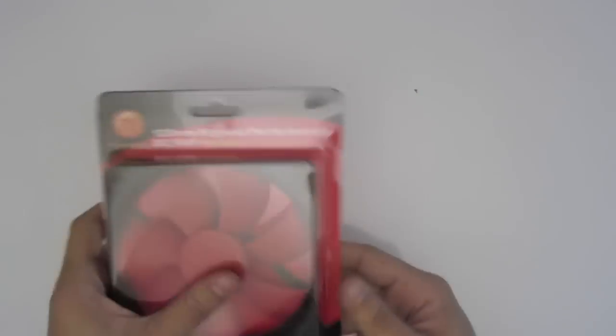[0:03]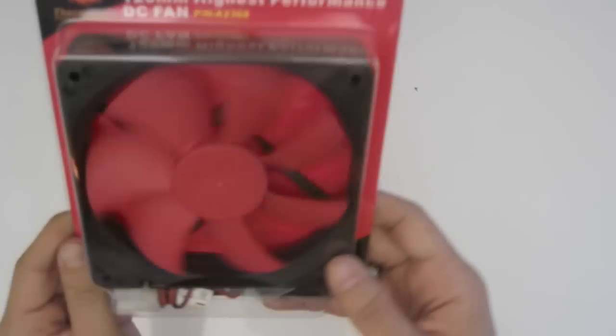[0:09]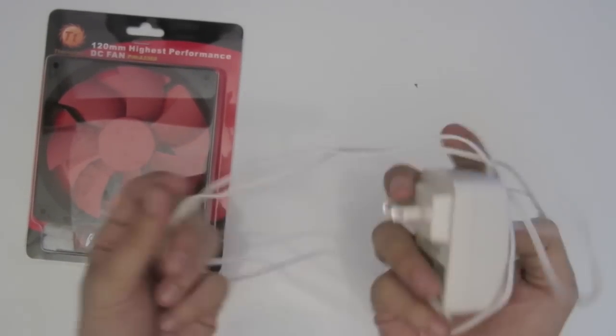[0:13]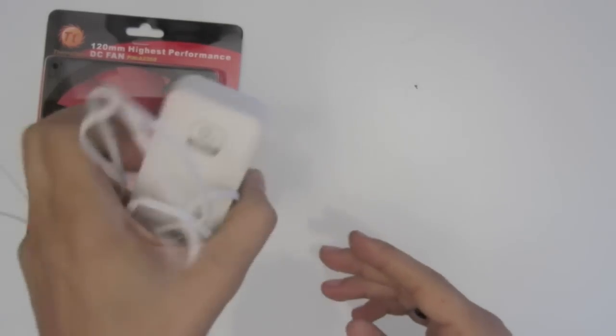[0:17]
So I'm going to make a really quick magnetic stir. First thing you're going to need is a PC fan. This is a really easy $10, $15 PC fan. Going to need a standard AC adapter that just goes like a wall wart, 12 volt.
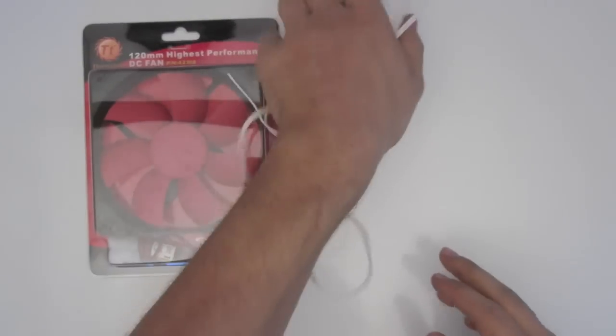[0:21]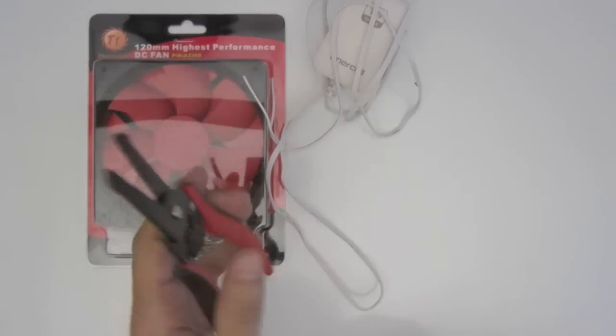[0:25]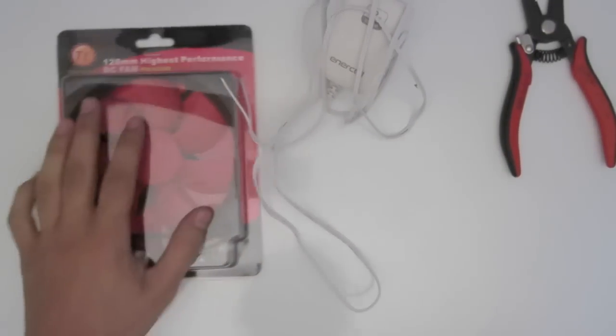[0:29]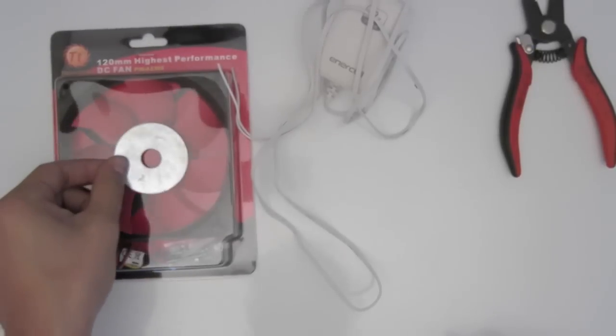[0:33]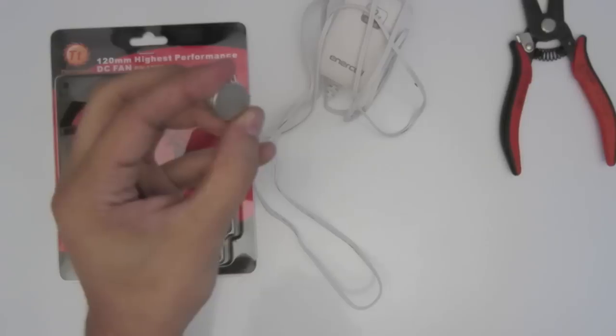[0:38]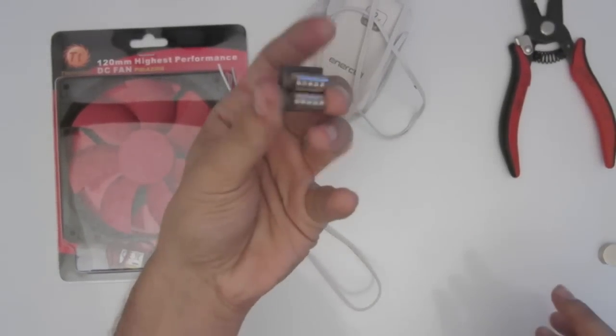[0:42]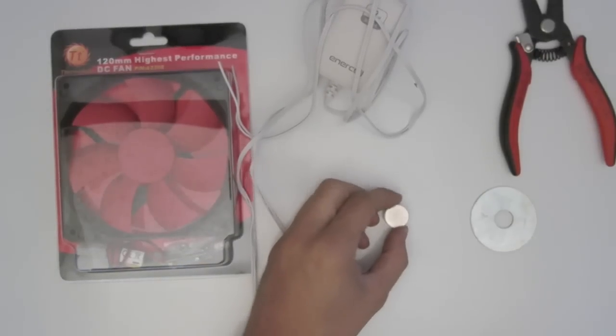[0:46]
Going to need some wire cutters, wire strippers. Let's see. You're going to need a pretty big washer that'll fit over the center there. Some rare earth magnets. So we got 3 here, and then I got a couple of other smaller ones here. And that's all you need. Alright, so the first step is to
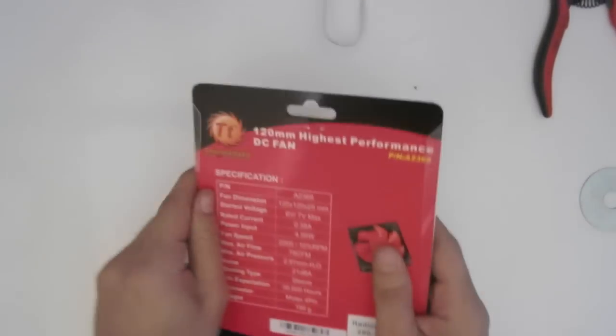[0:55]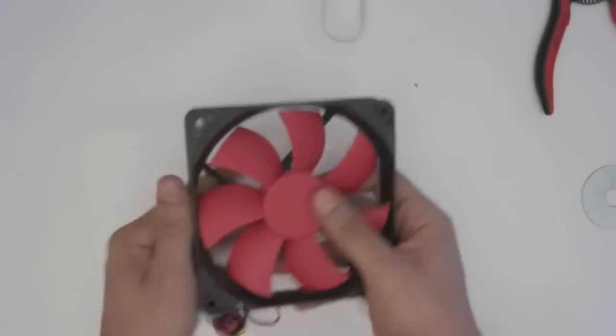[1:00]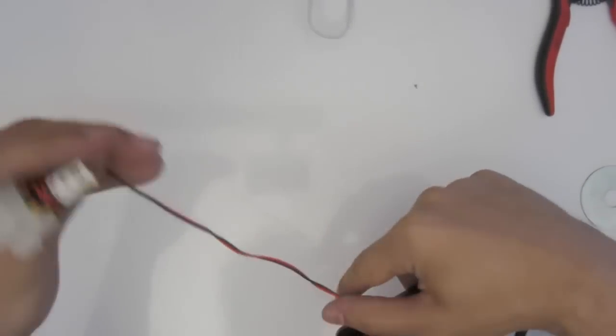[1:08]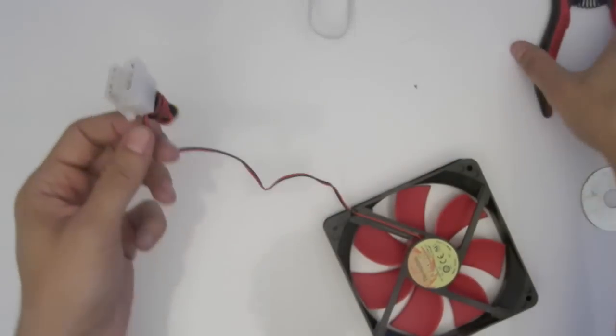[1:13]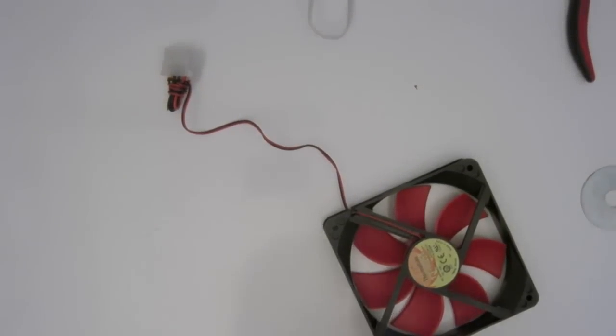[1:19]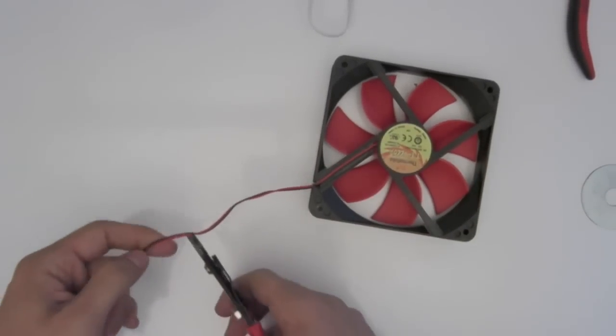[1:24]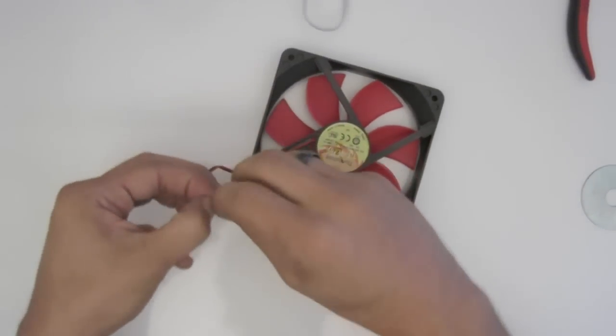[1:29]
make sure your magnets are away from everything else. Open this up. So we don't need that. Basically, just need the black and red wire. So there's a yellow wire in here, but we're just going to snip that off. So we can go ahead, grab the cutters, snip that, split them apart.
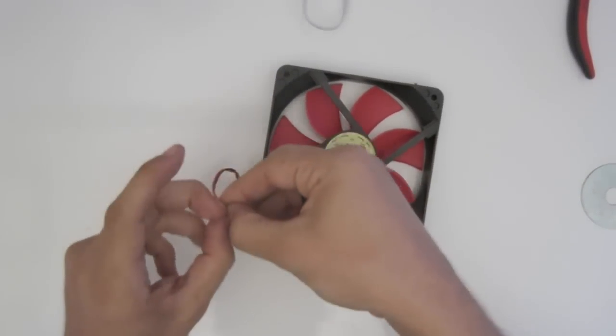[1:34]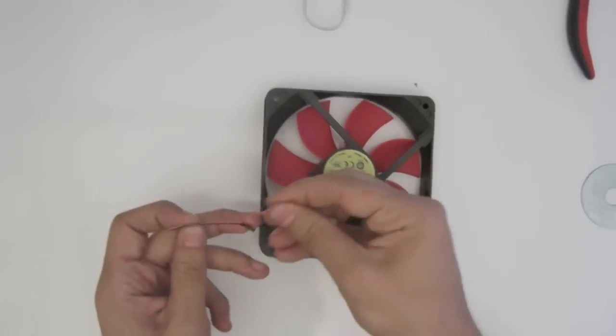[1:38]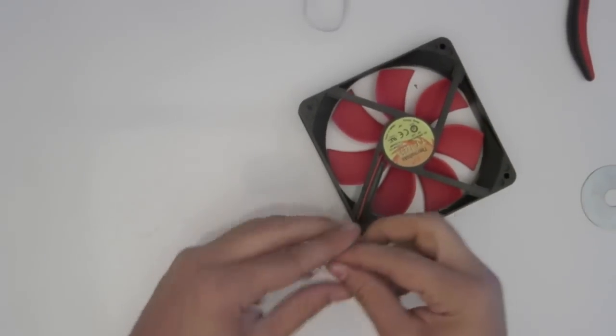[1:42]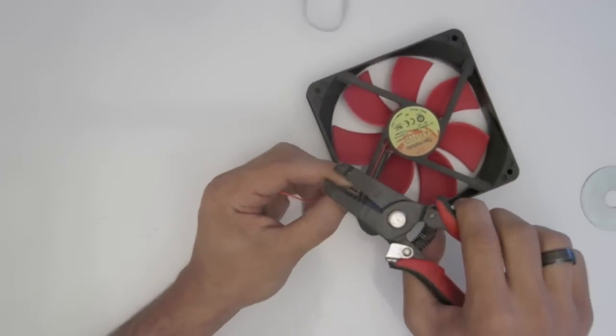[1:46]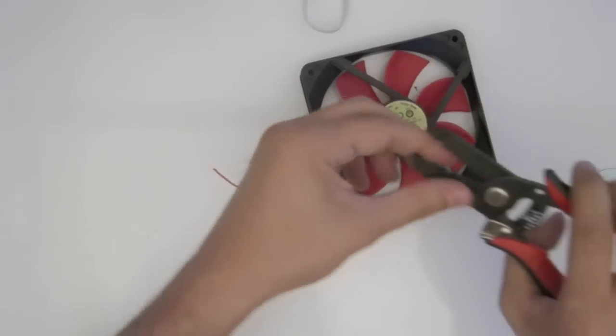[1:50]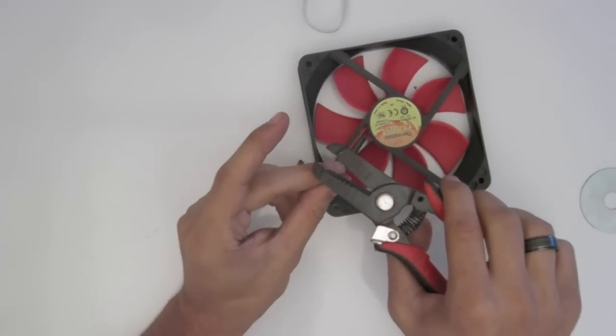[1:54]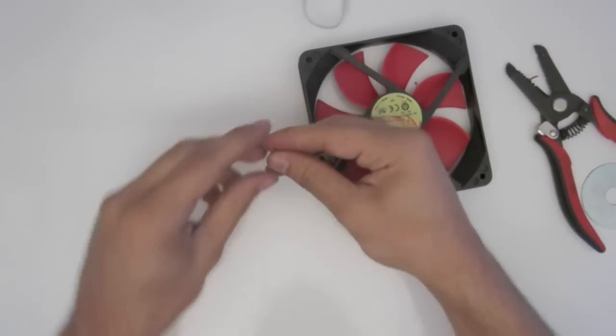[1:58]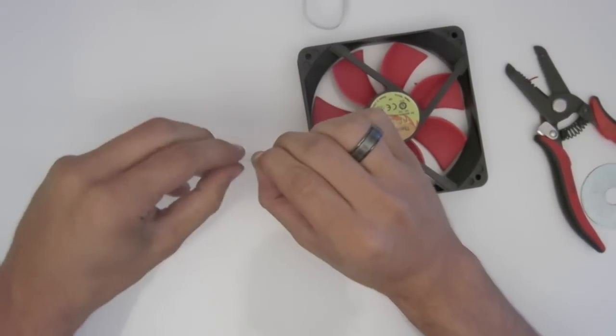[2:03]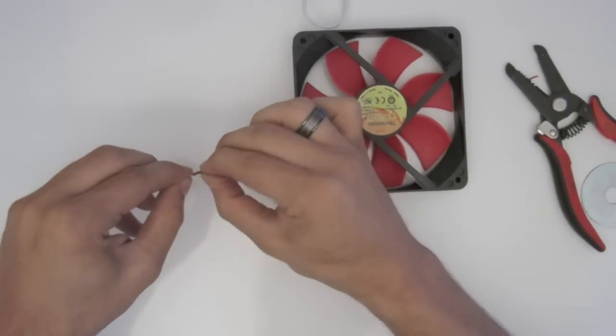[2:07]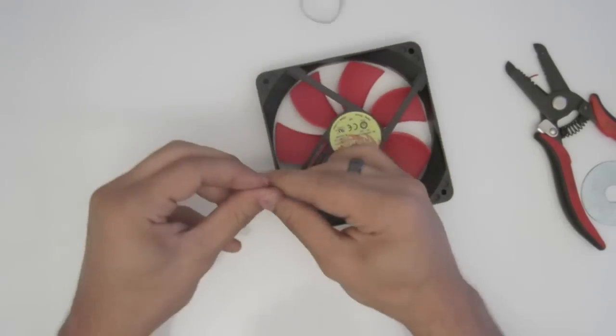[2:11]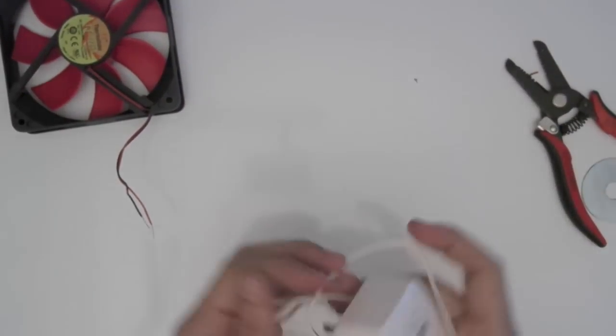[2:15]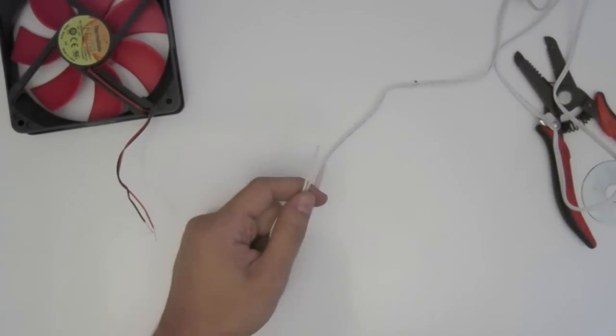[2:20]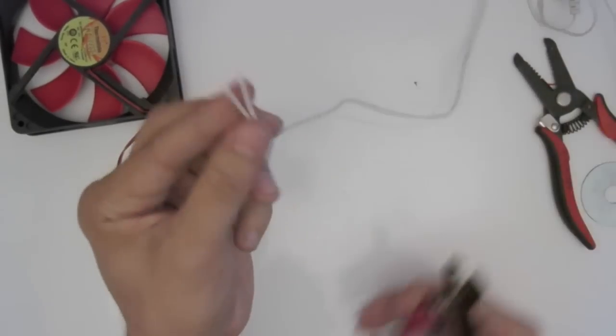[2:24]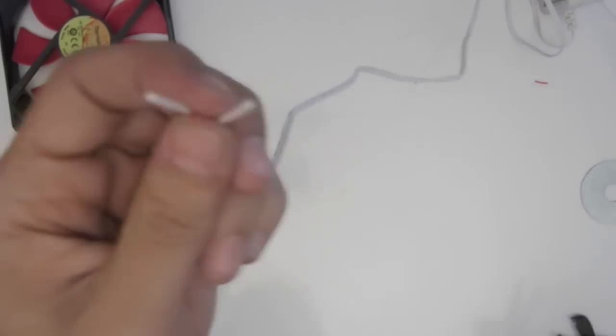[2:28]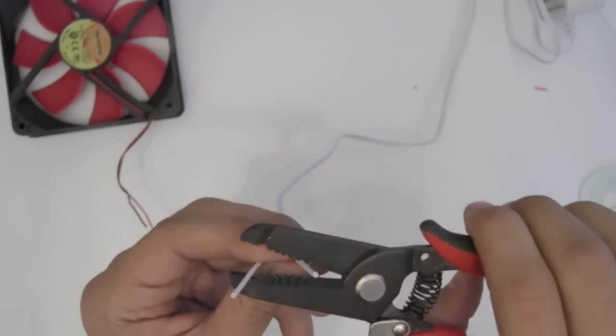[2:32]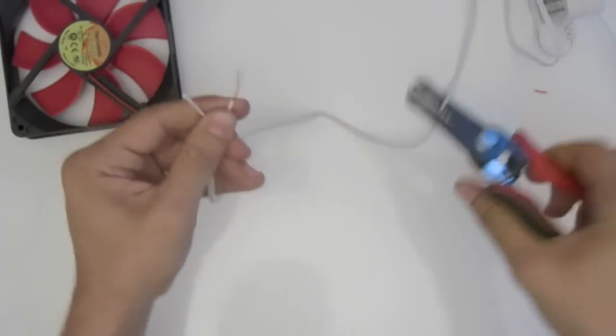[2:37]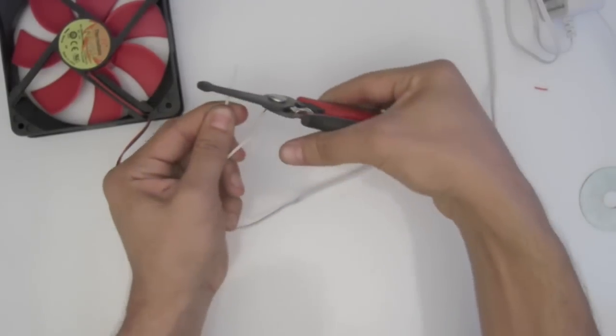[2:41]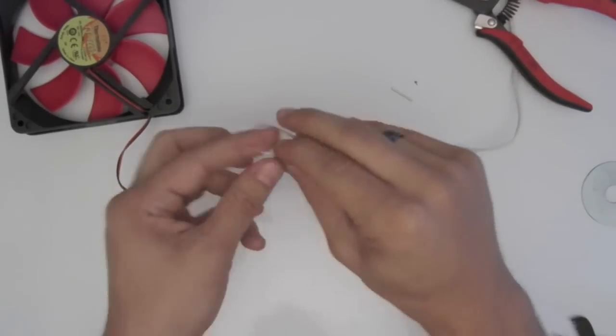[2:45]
Then you're going to want to strip them. And twist it a little bit so they're all straight. Alright, good, so that's done. Now we take our power adapter and we're again going to cut off the opposite end. I've already done this because I've been using it for other projects, so I just cut it off a little bit lower, and again same thing. Gonna strip it. And twist it.
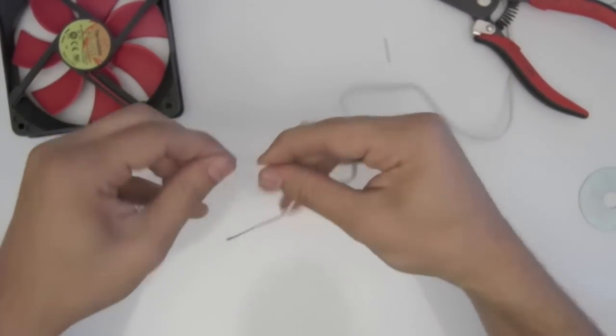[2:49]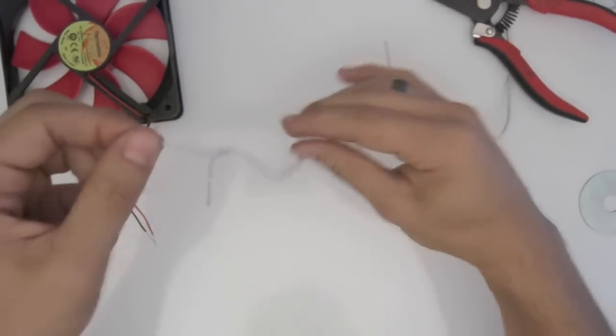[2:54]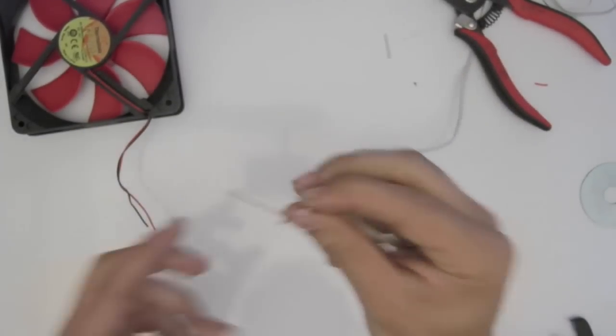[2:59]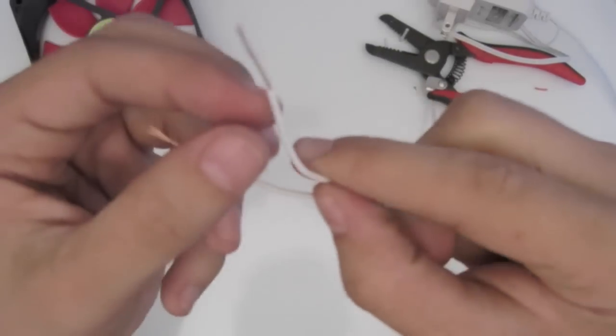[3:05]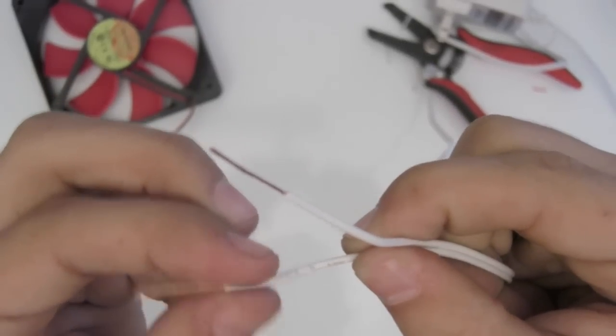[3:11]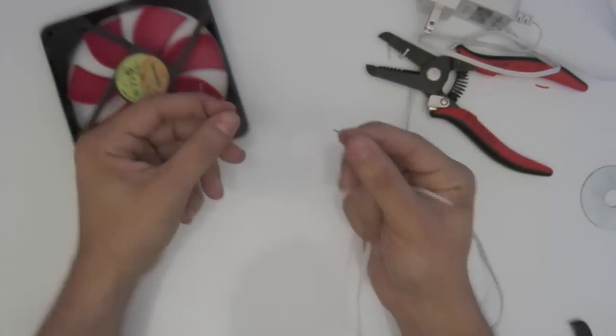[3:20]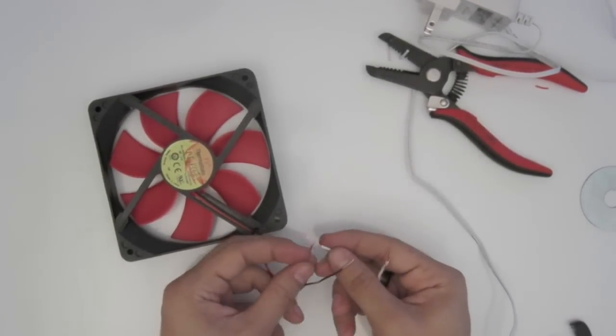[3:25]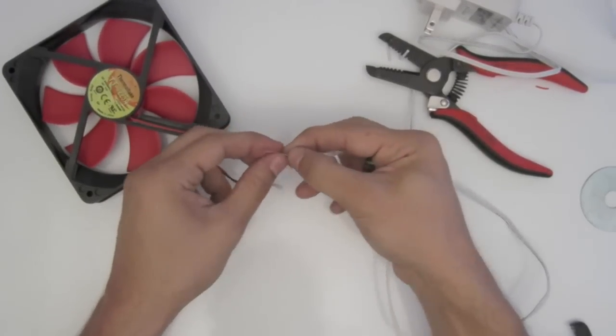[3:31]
Now, here comes the first tricky part. This happens to be a white cable. Normally on a black cable you'll have a white line that'll tell you which one is the positive and which one is the negative. On this one we do not have that. So we look, and one side has a couple of raised bumps. So we know that this one is going to be the positive, meaning we will hook it up to the red one. So we just cross these over, do a little 90 degrees, and twist them together.
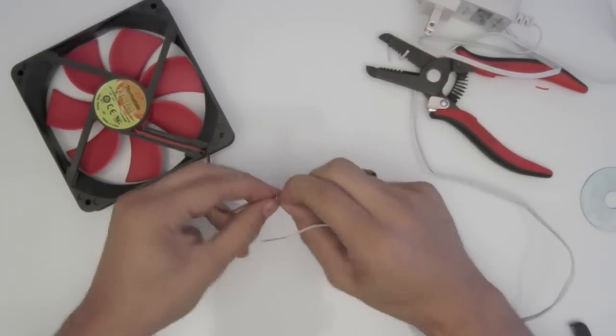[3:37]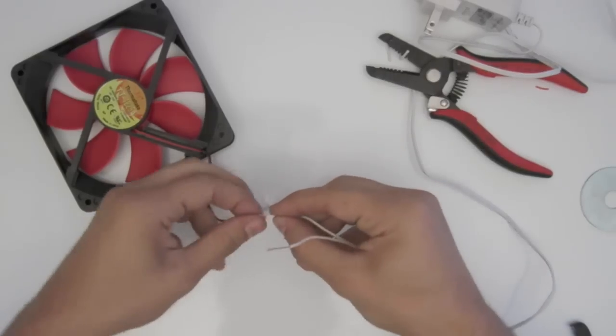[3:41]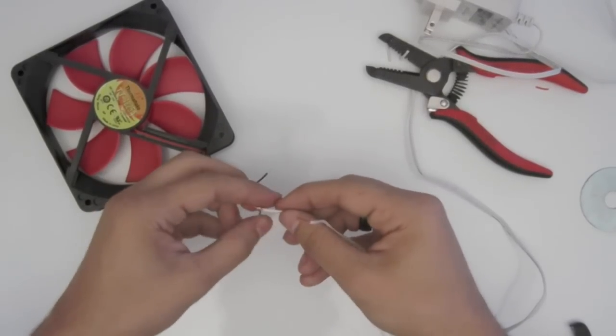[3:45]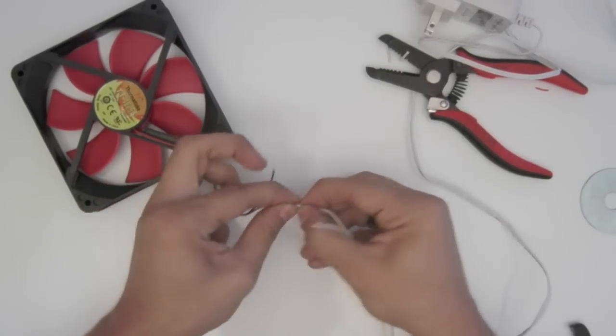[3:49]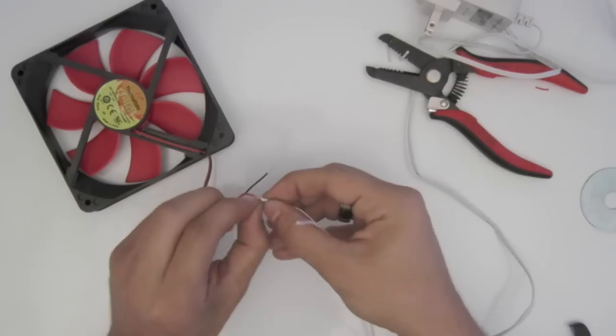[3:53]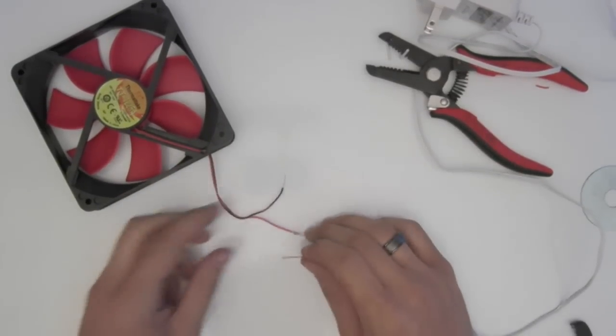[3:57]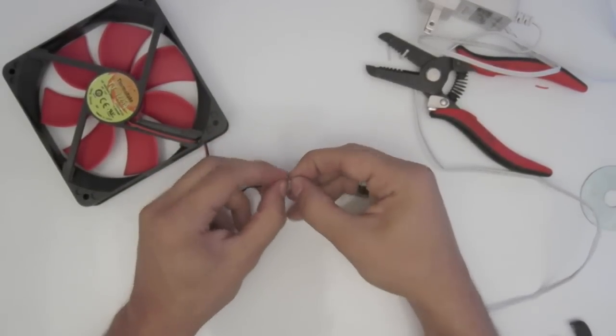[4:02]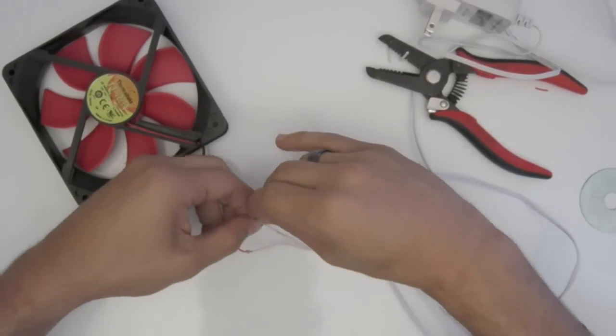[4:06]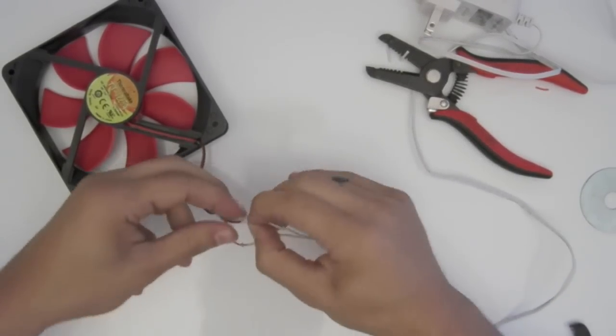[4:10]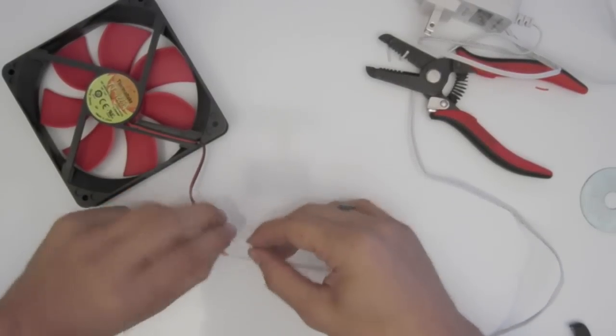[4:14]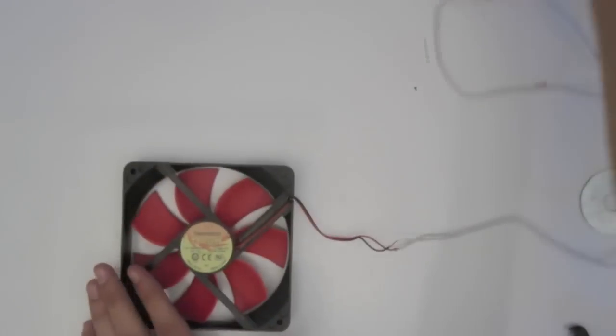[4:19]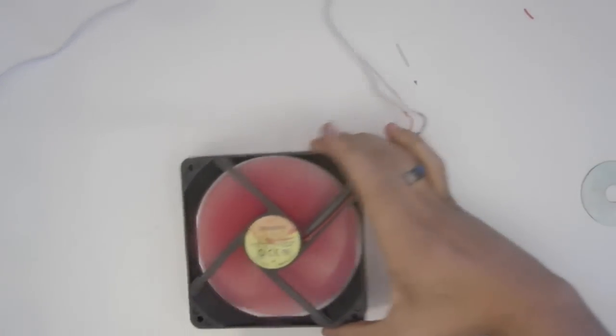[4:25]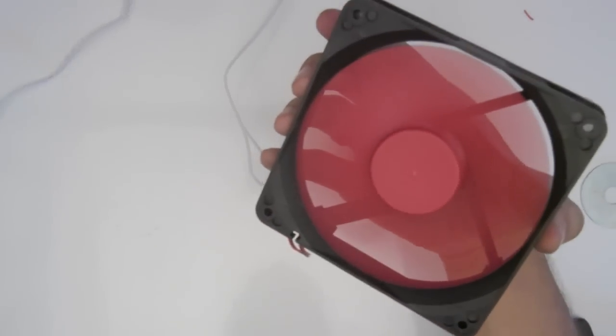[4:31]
So you get a nice solid connection, and after you test that it works, we can solder it together. Alrighty. And normally you'd put a little bit of heat shrink over it, but I'm going for speed right now. So 90 degrees, twist it up. Good to go. Alright, so if all is good, plug this into the wall and it should turn on. Boom. We're live. Alright, so that's pretty cool. Good fan.
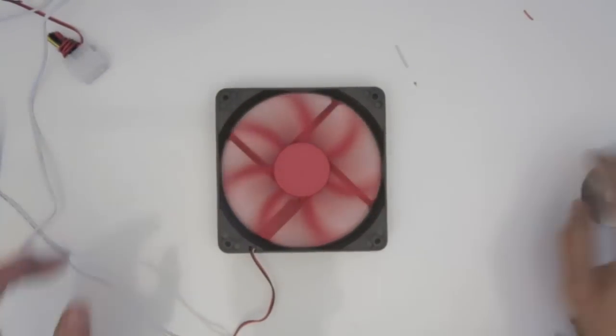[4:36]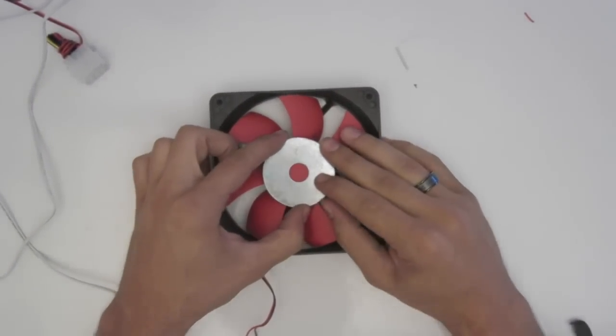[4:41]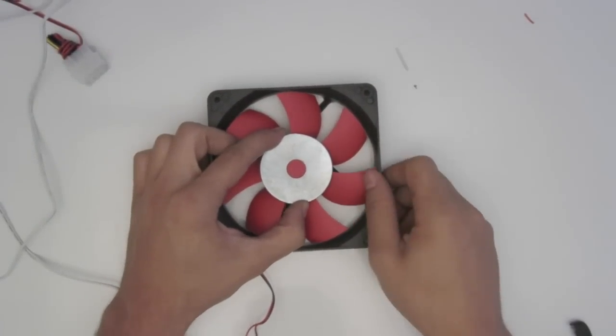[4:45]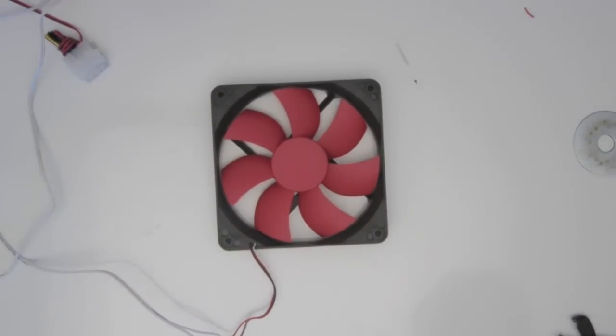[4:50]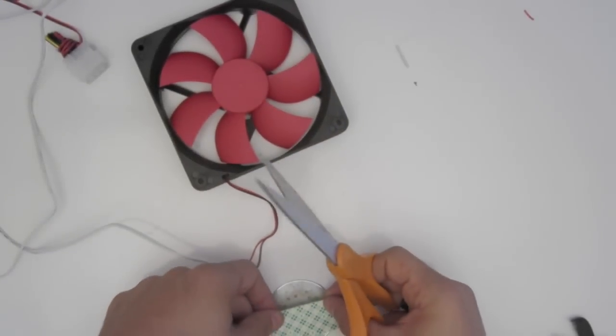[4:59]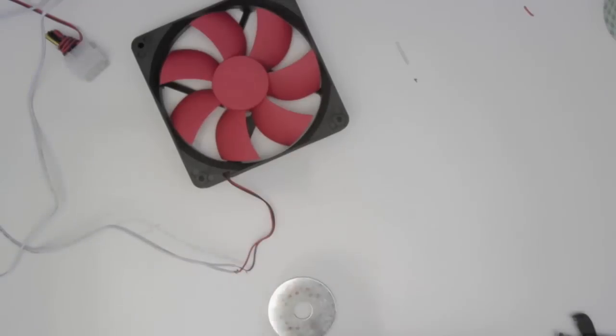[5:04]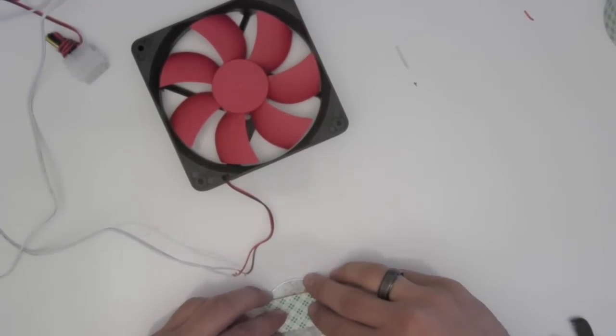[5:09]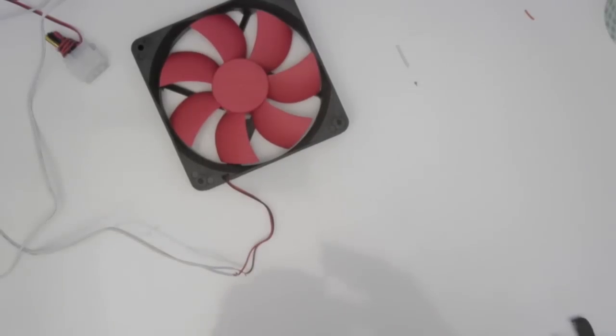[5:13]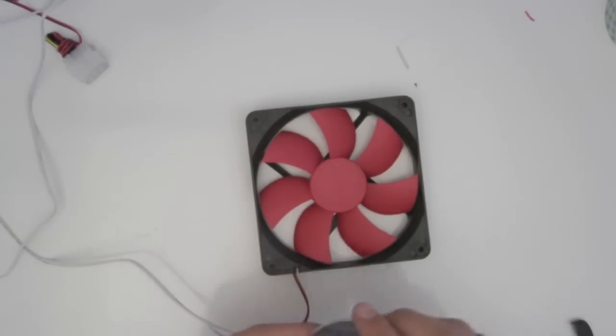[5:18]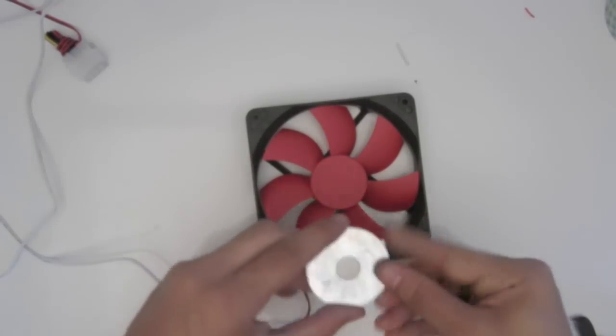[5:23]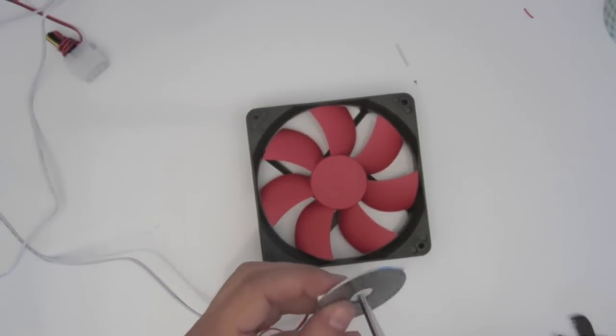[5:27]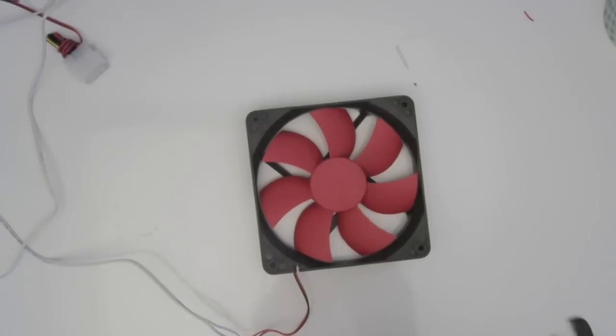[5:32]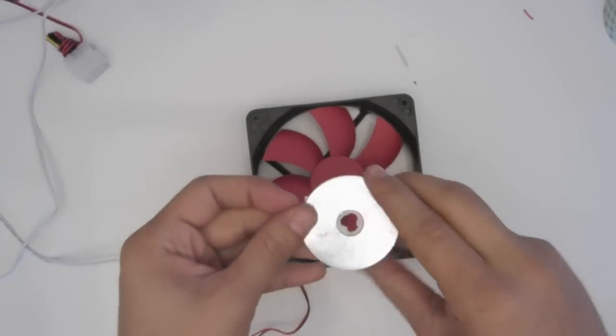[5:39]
Now we'll move on to part 2, which is we're going to try and connect this thing to there, right in the center. I'm going to use a little bit of double-sided stick tape. I need some scissors. Alrighty. We want this to be centered. We're going to use that to sort of measure it up. I want to see in the center so I can line it up. Alright. Looks ugly, but who cares? Fix it later.
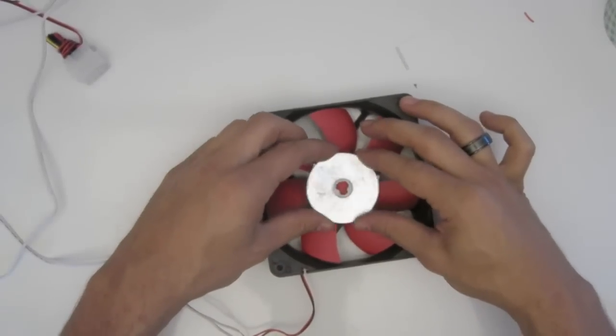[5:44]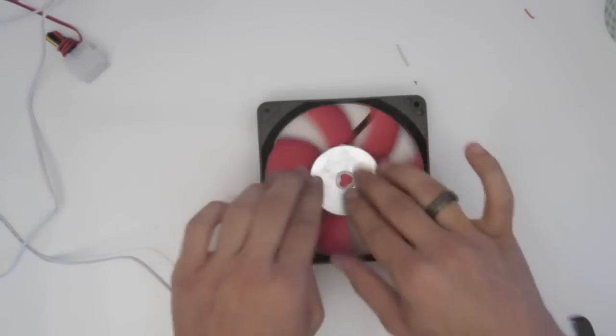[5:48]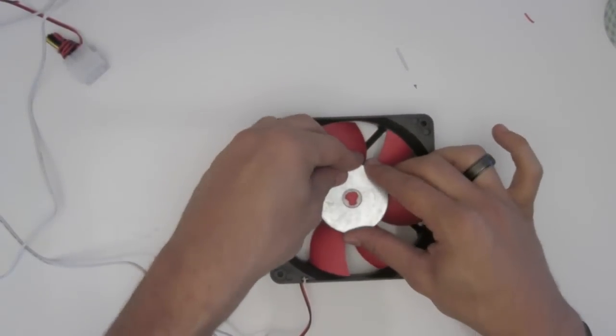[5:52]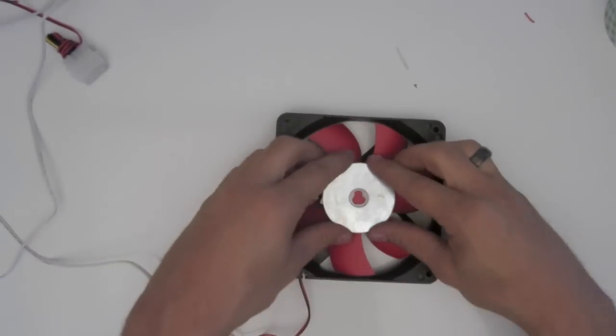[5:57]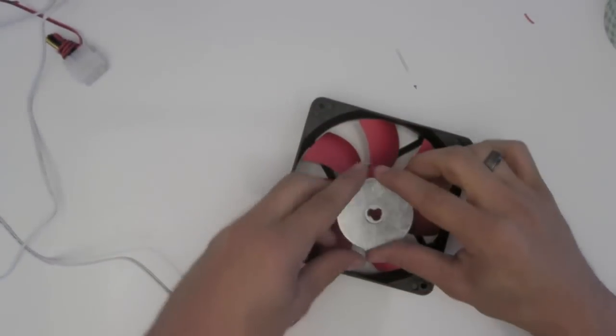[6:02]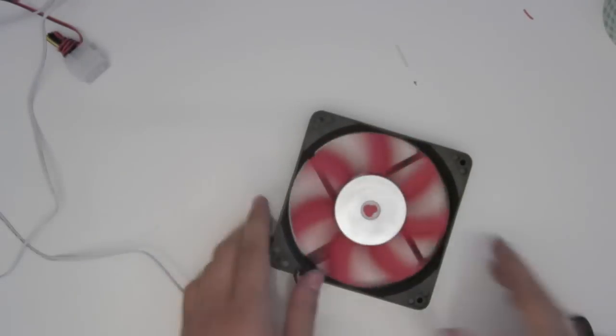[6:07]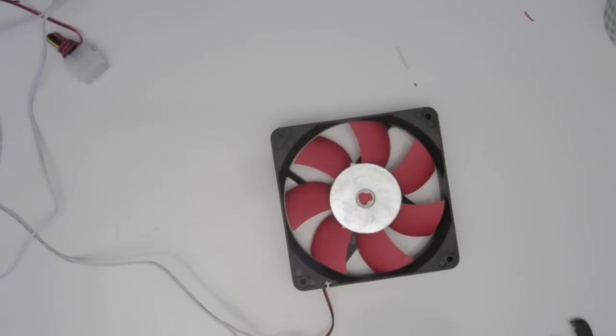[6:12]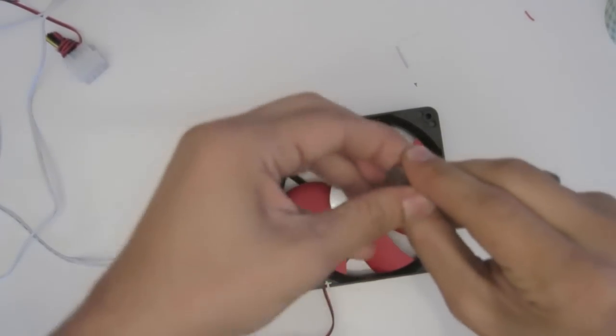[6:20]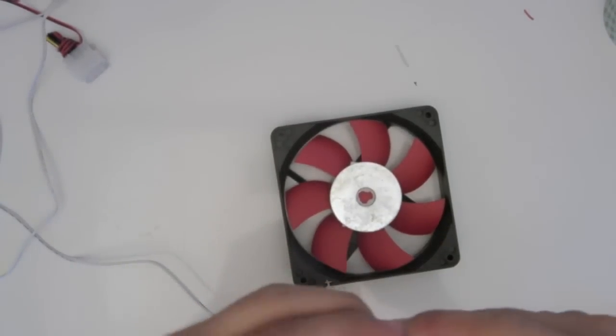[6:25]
Well, closer. Nope. Nope. Really not close. Alright, that's good for now. So, stick this on. Then, we want to take our flat magnets, slide them off, not easy. Alright, so we only need two.
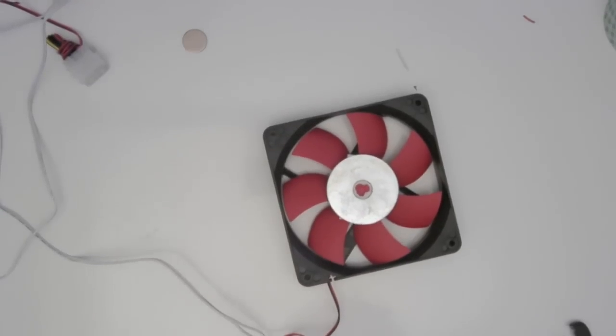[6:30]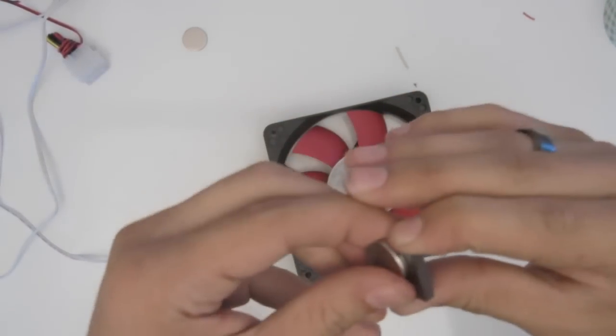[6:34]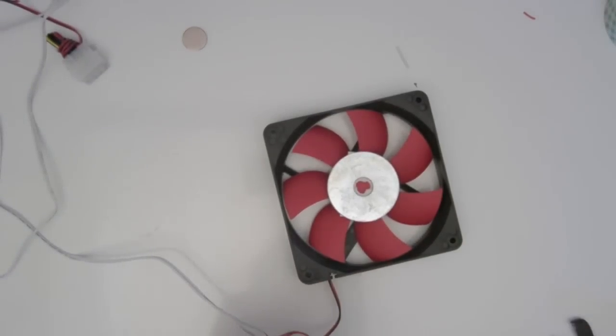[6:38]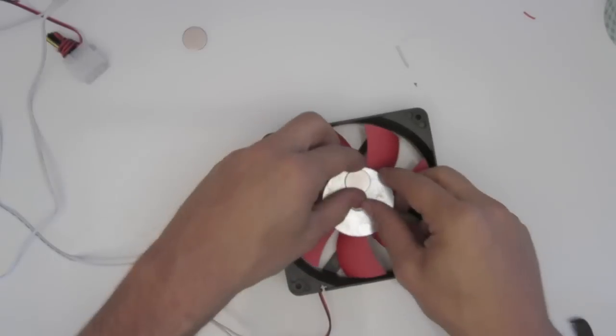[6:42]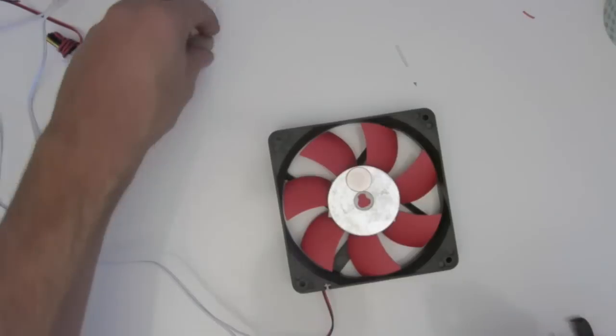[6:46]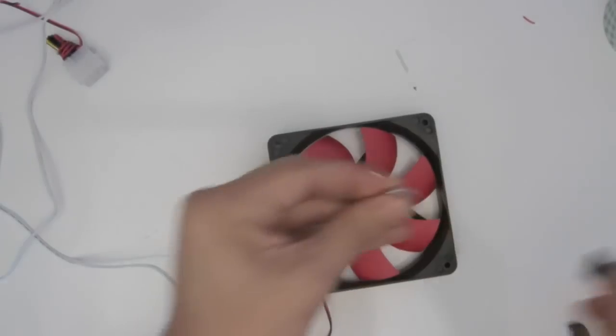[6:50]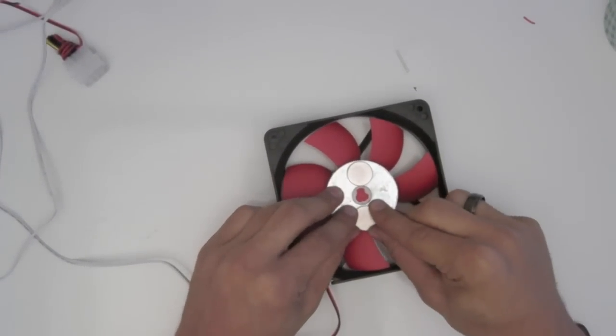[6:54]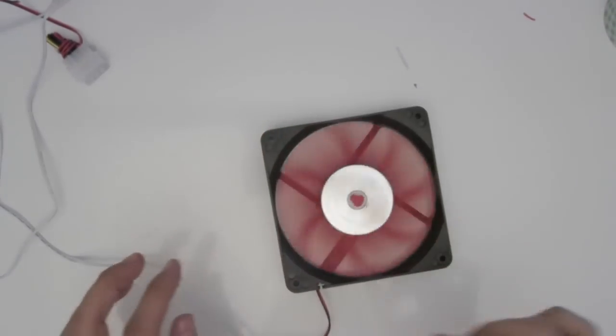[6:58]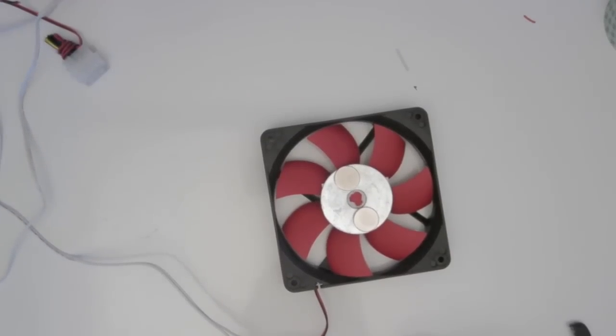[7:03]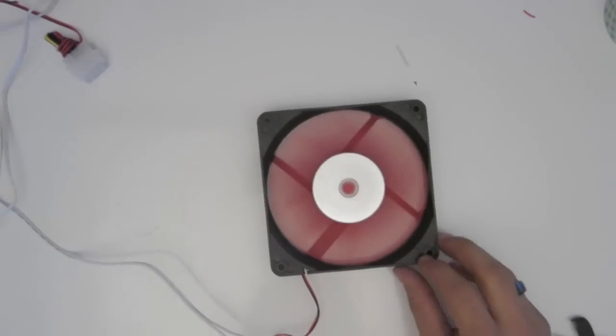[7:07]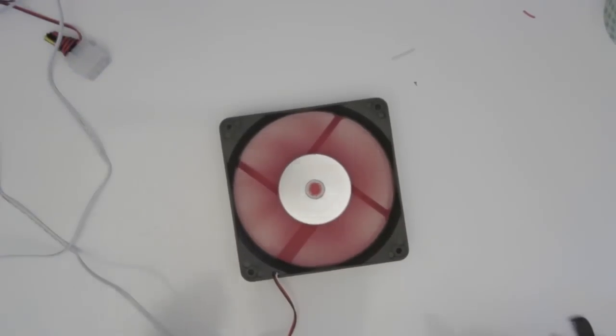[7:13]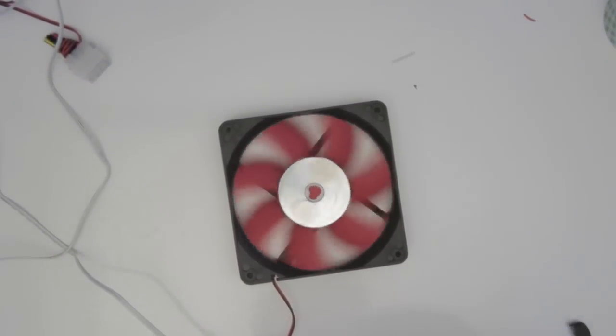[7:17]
We want to put them, first we want to test which side. It's going to go down, so that side's going to go down. So, we want to make a straight line, one on each side. So when we turn it on, hopefully it shouldn't be too wobbly. Alright, pretty good. So, next and kind of final step.
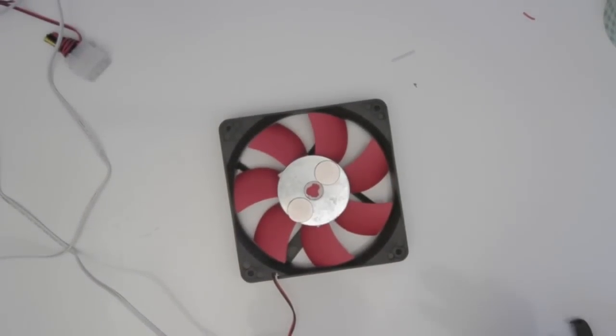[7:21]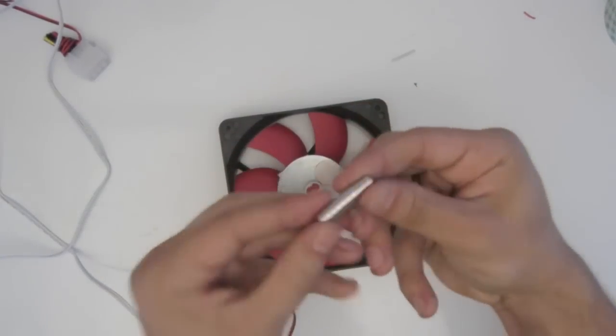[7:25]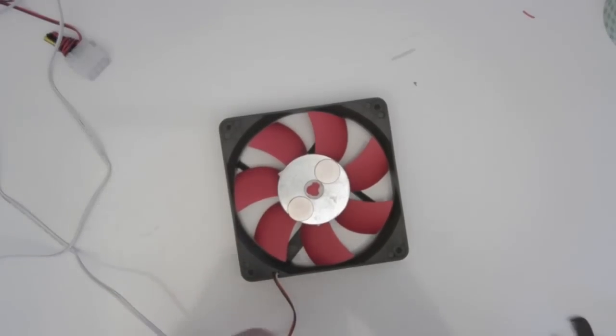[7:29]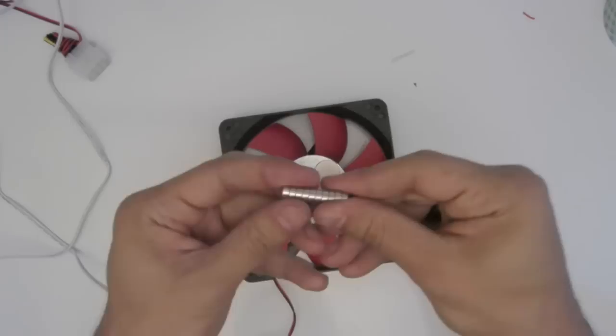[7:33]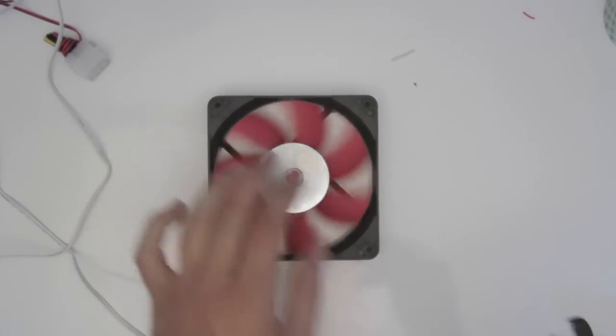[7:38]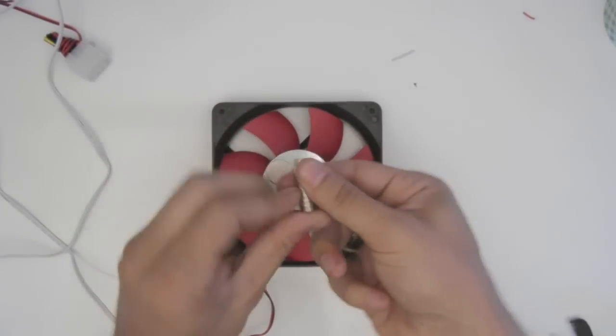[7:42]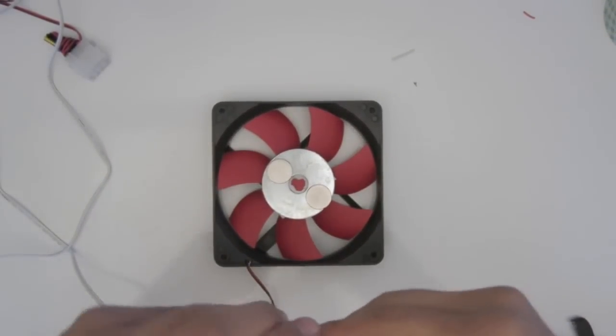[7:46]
Alright, so we need to put something in our glass to follow this. So what's happening is we're basically taking another piece of a magnet, and we've probably all done this, is put one on top of the desk and one on the bottom of the desk and make it magically move. Well, this is the same sort of thing, except the bottom part is spinning really fast. So what's going to happen is the top part's going to want to keep up, and it's going to start spinning fast. So let's make this a little bit shorter.
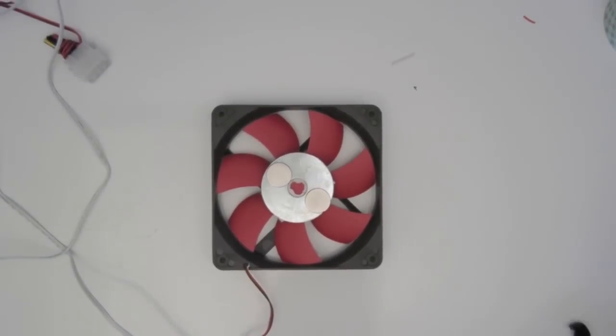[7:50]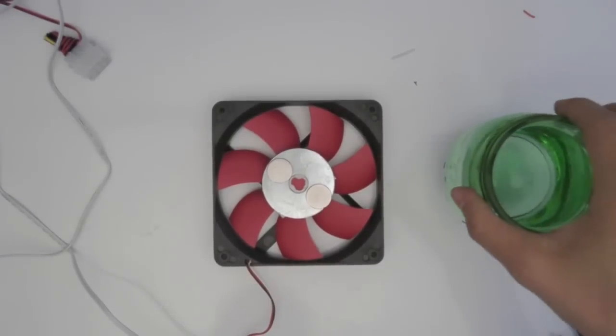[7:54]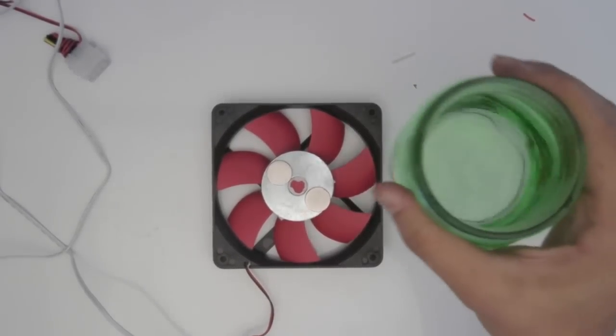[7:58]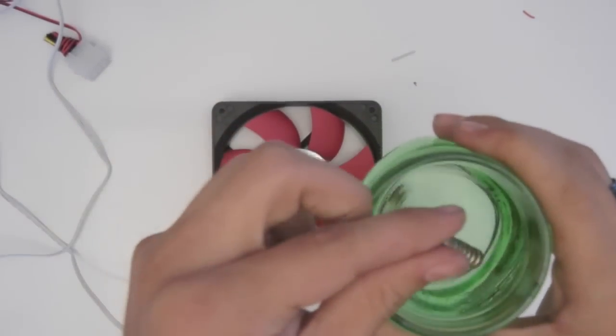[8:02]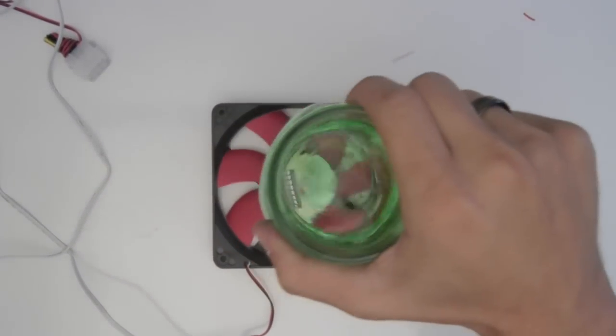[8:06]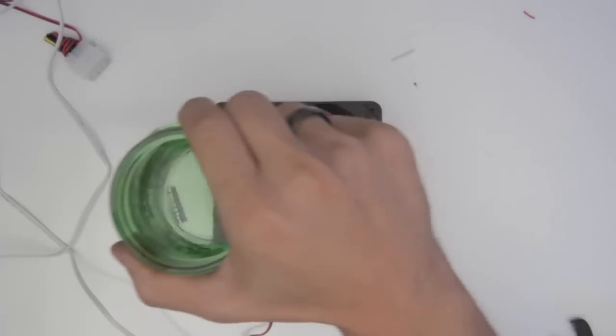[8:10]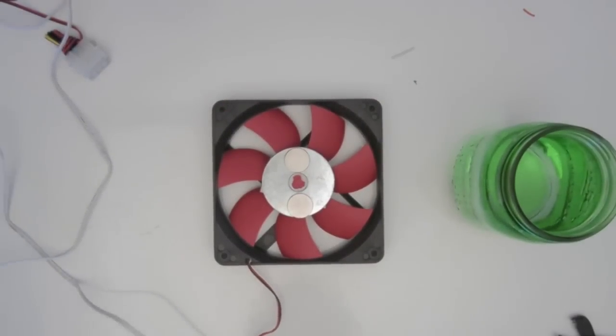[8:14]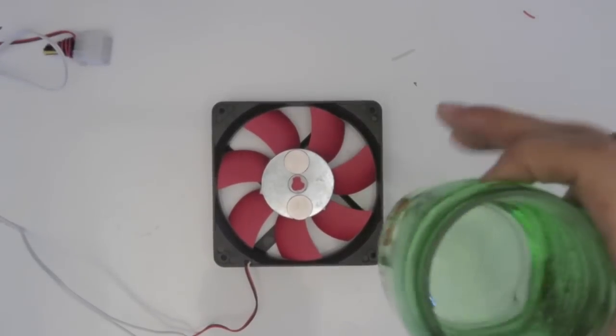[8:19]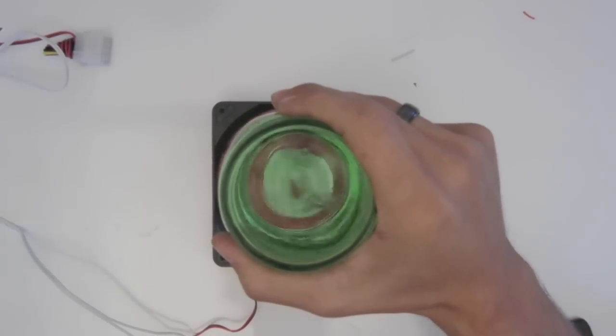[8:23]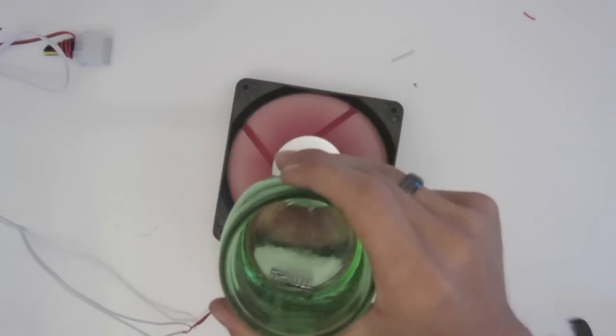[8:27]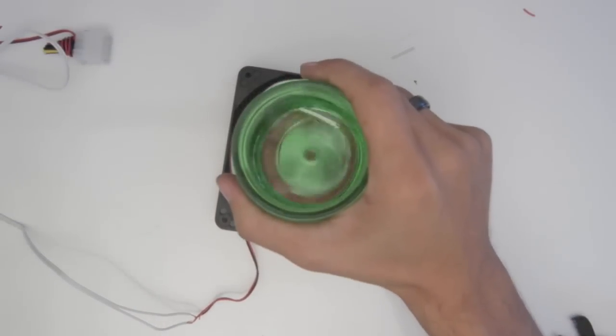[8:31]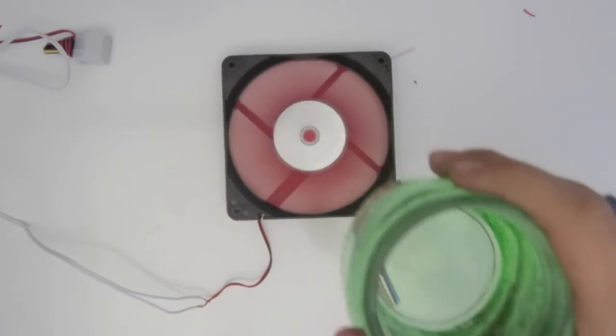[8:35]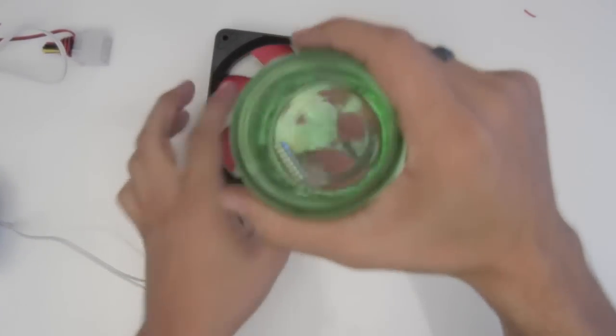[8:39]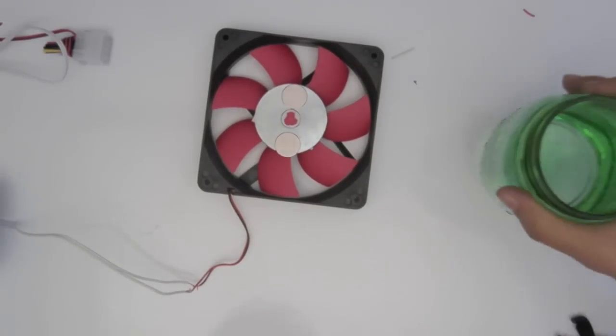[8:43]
Cool. Now we're going to bring in a little mason jar of water. And what I'm going to do is toss this in there. And what we should see is, you can see it a little bit. It's moving when it goes over. So, when we turn this on, we should start to see a vortex form if there's a magnetic force between what we have in the bottle, and there is. Doesn't quite work. We have to see. Ooh, that was fast. Alright, so why isn't it working? It might be because the bottom of this bottle is not flat.
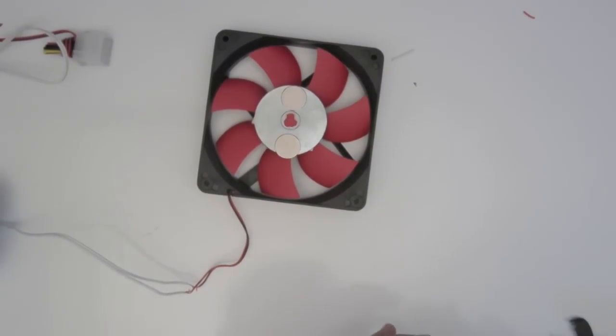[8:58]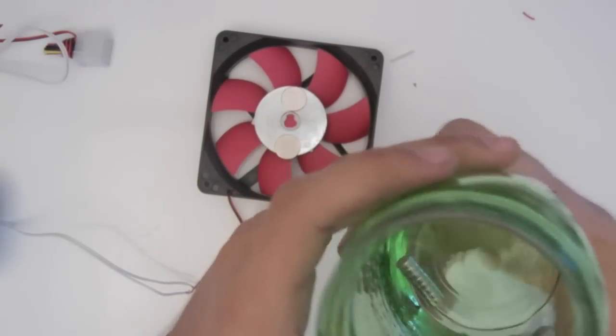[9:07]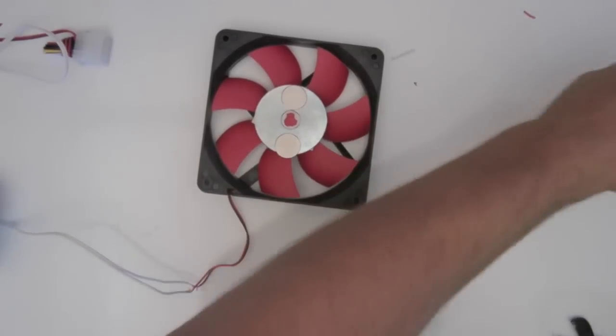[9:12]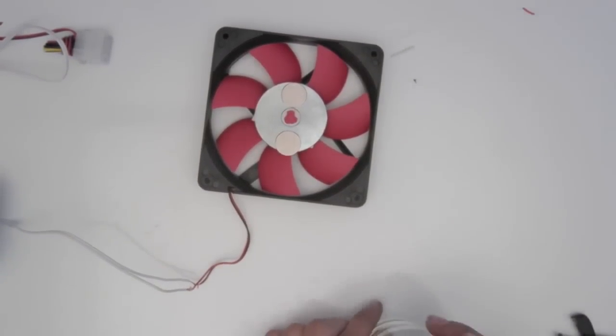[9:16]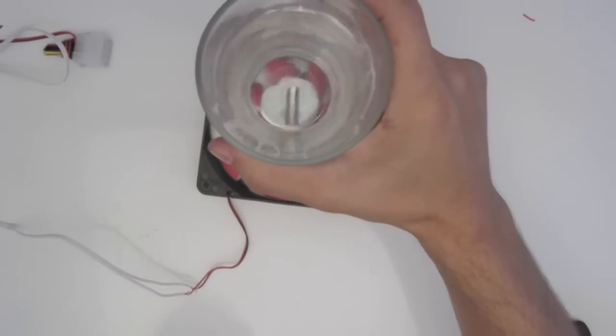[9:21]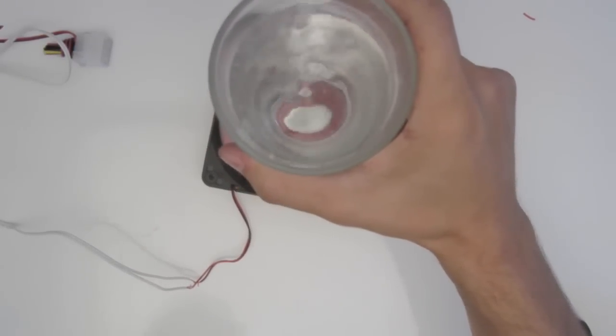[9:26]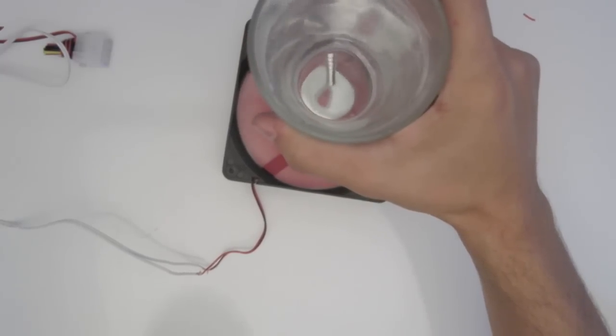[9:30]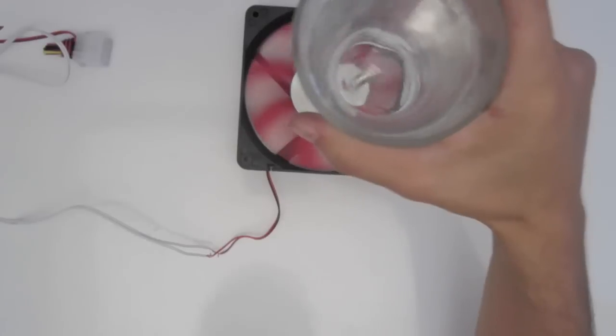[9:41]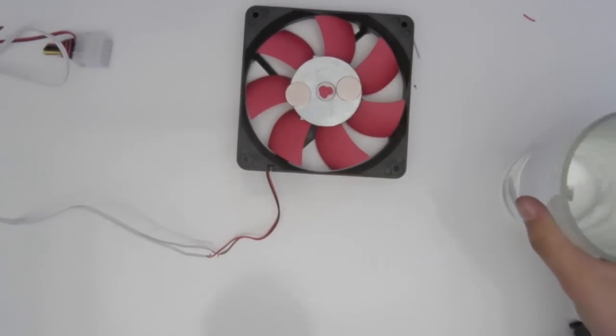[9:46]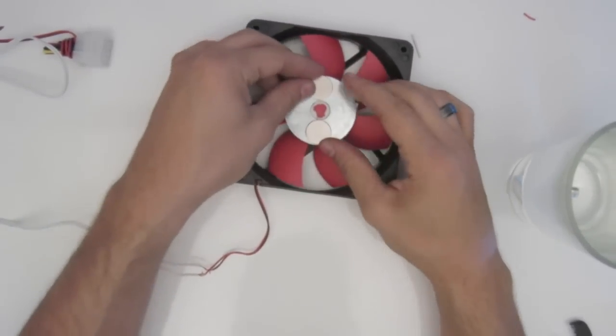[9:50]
One second. Alright, let's use this guy. There we go. Vortex, go vortex. Oh, it's happening too quickly. So it works at lower speeds. These are moving a little bit. Alright, so I might need to glue them down. But we're going to have a working version soon.
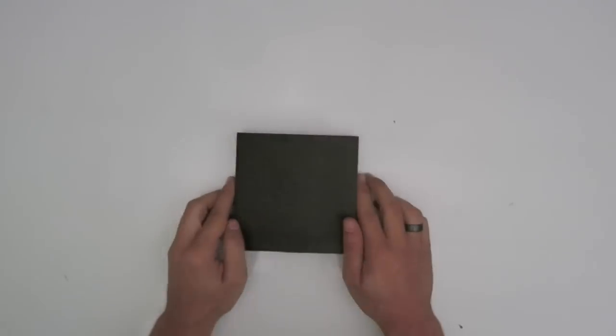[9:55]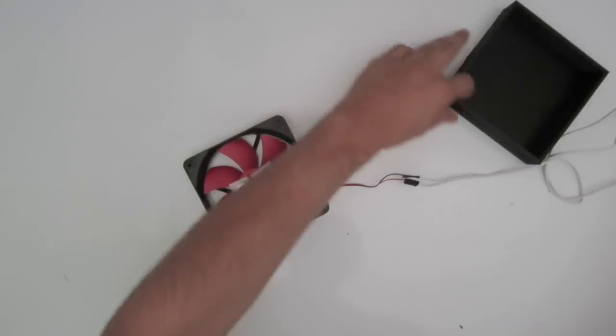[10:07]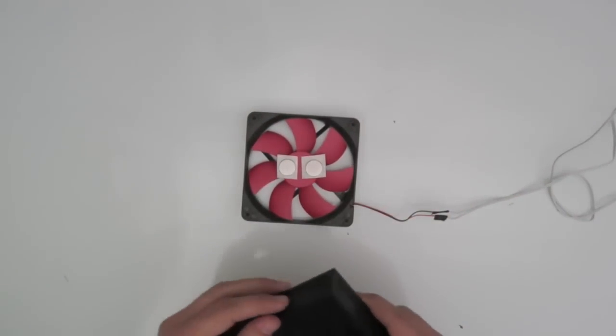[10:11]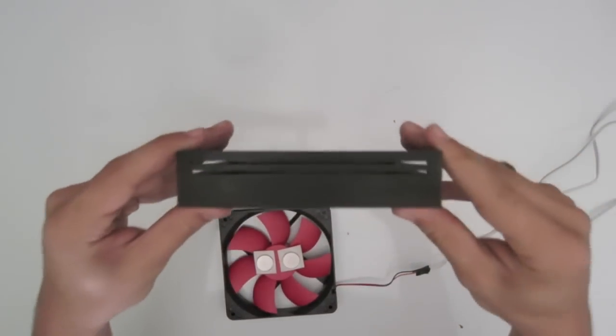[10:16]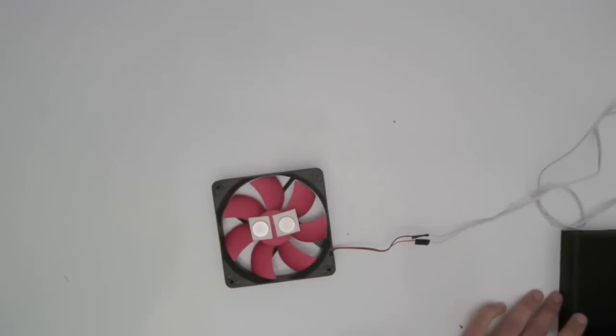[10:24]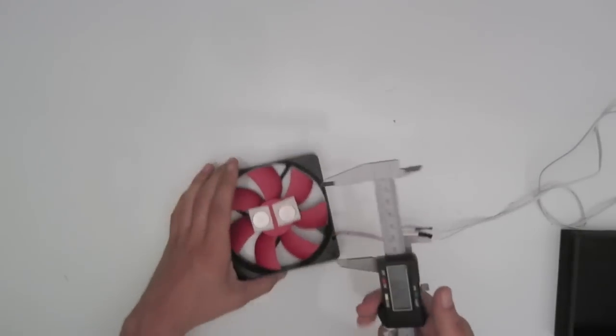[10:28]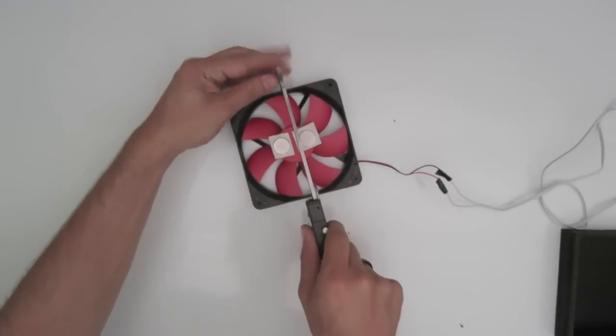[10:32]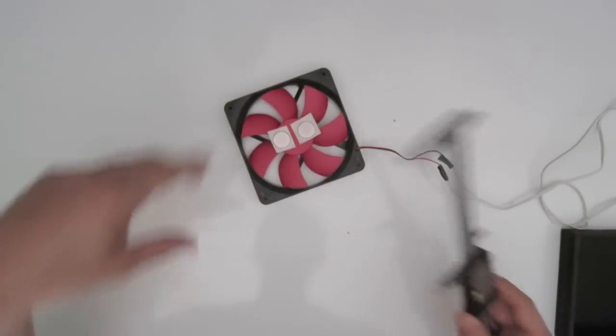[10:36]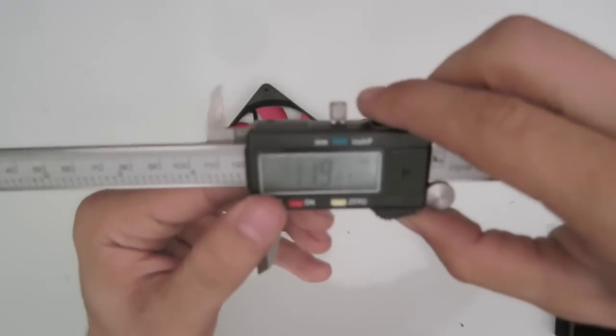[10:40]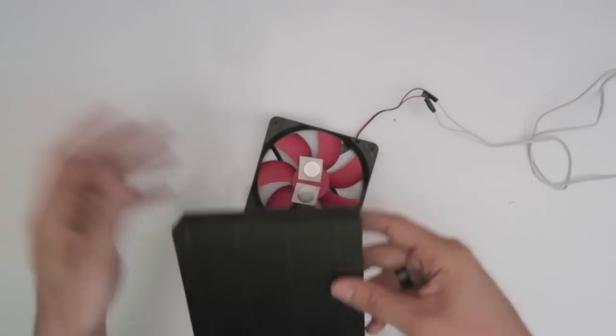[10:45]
And we're back with a V2 of the magnetic blender. This is a 3D printed case, it's empty. But it houses this guy, so let's give it a little test run. First of all, this guy has a couple of slots for the air so it doesn't get all messed up. Pretty easy to get together. Just use these guys, calipers, boom, figure out the distance. This happened to be 120 by 120 or 119 if you want the exact, but I gave it a little bit of wiggle room because the printer is never exact.
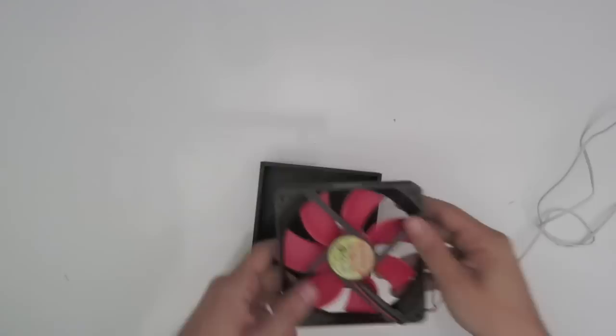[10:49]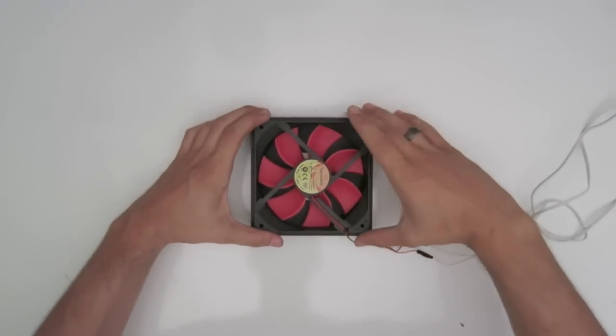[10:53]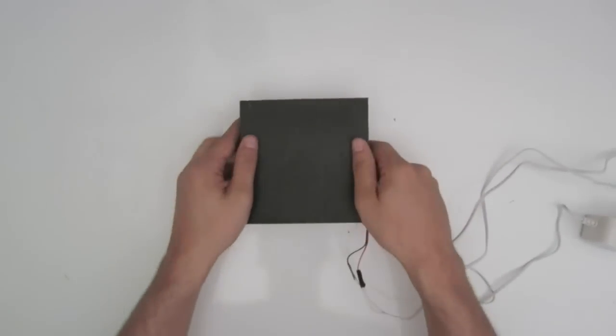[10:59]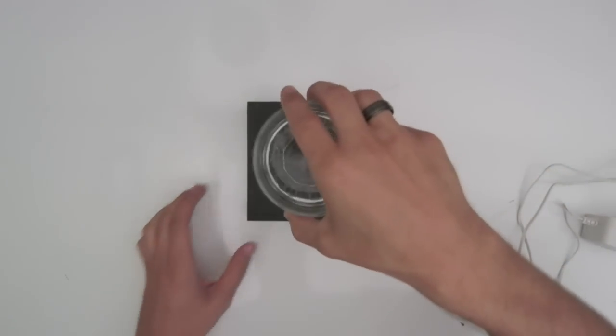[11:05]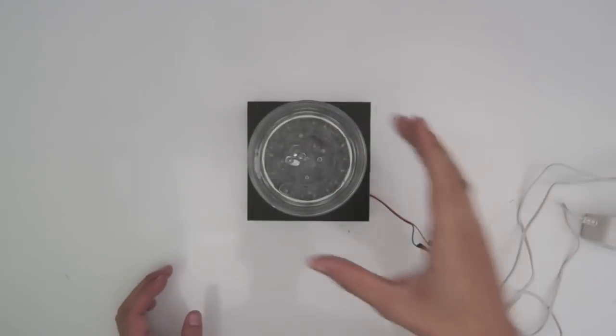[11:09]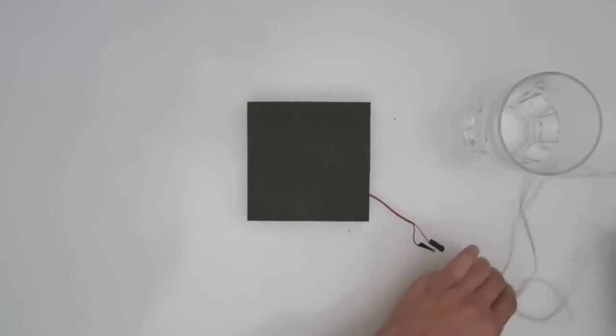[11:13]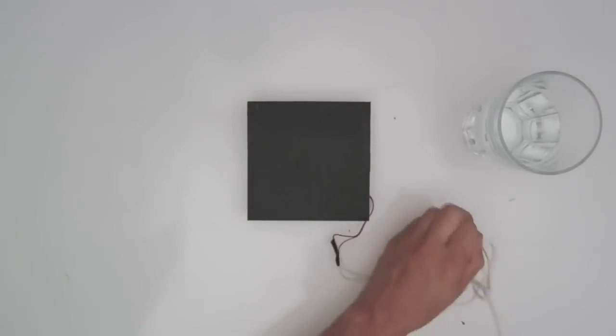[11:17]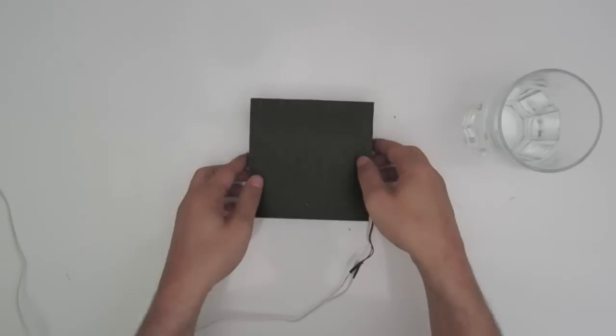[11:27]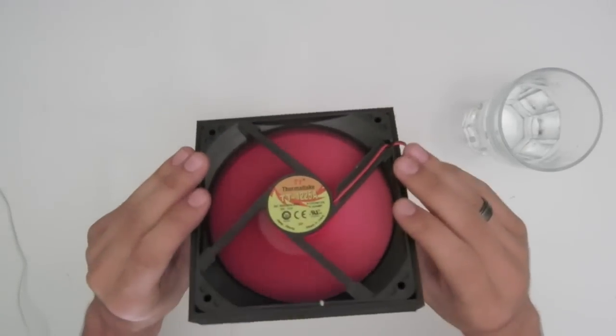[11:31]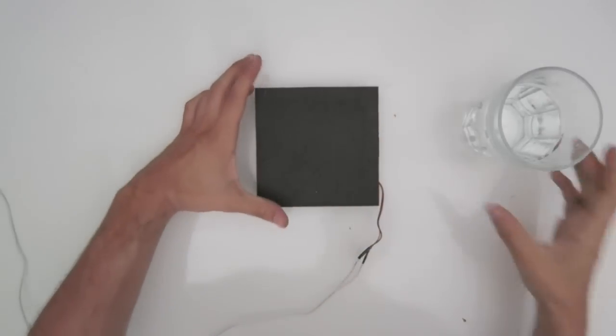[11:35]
So put this in upside down. Now I'm probably going to want to put some spacers on the corner because what happens is I'll put the glass on top and that starts to weigh it down, and then I throw the magnet in and that pushes it down even further and it gets kind of messed up sometimes. But let's put it for a test ride. So turning it on. Working. So we have the magnets spinning really fast in here.
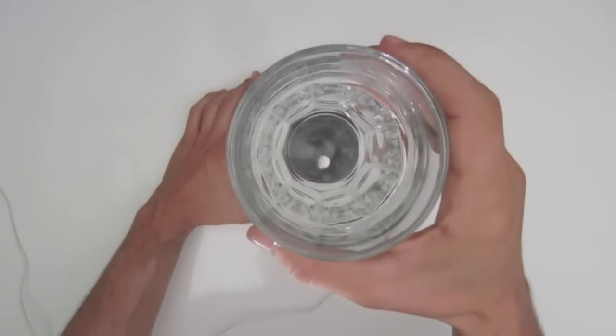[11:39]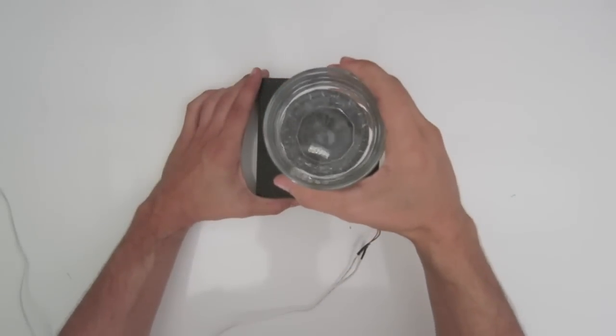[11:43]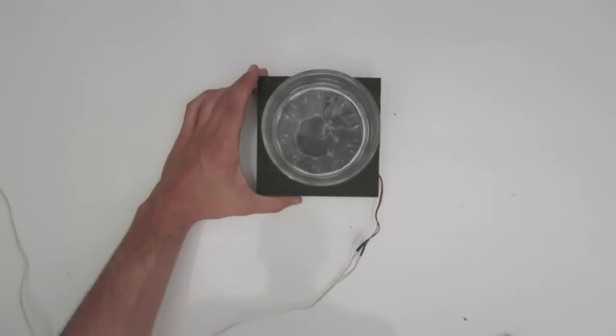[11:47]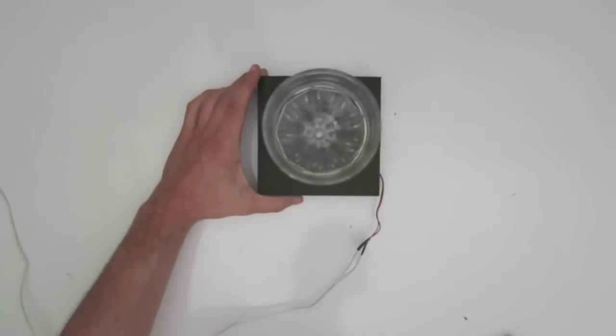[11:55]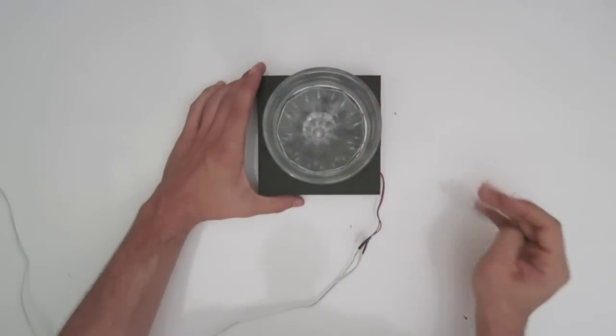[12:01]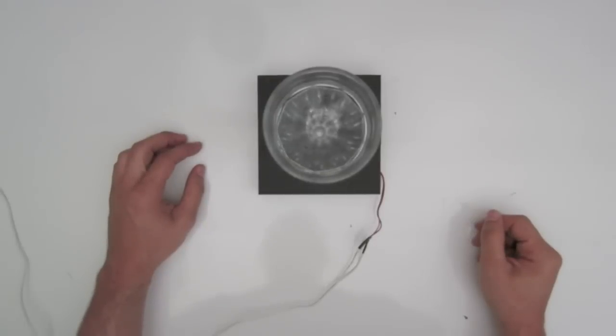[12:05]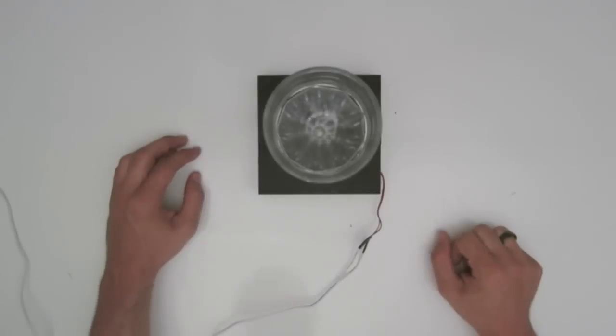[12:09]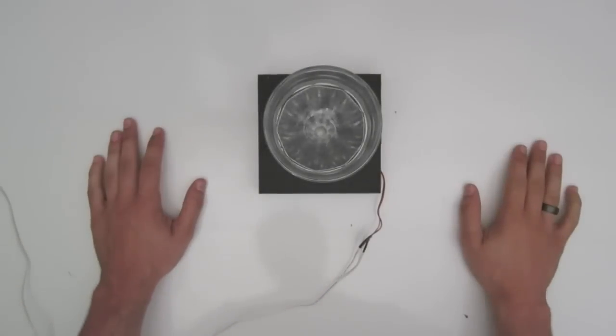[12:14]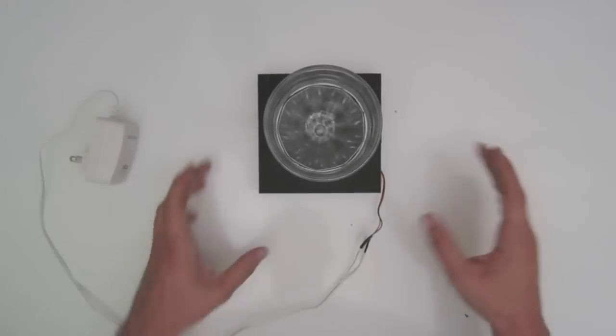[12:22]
Now we got this guy, and it happens to be standing up straight. I don't know why. We're gonna get it to, alright, fell down. Now we're just gonna put it on, and boom! Super speed tornado in the house. Let's just let it run. Now I wonder, no, I can't turn it sideways. Let's, I'm gonna set up another shot so you can sort of see the side vortex. But this thing is working good. Let's, turn it off. That was a good test.
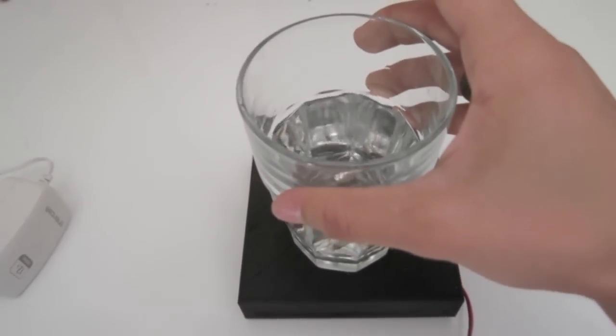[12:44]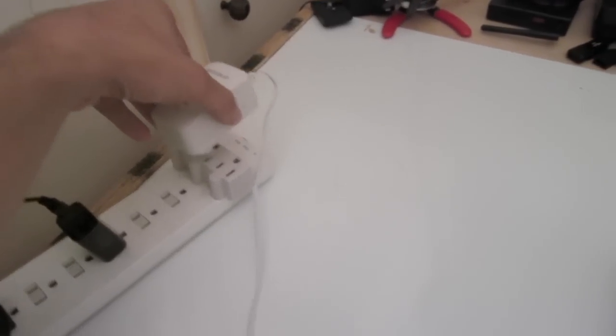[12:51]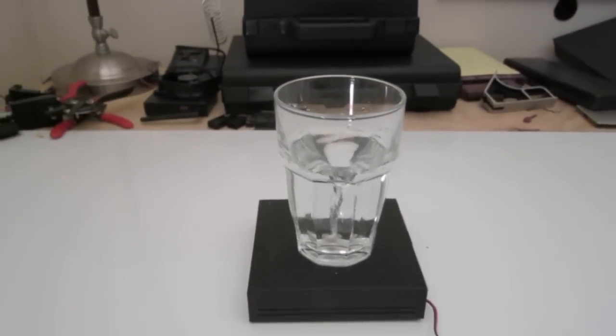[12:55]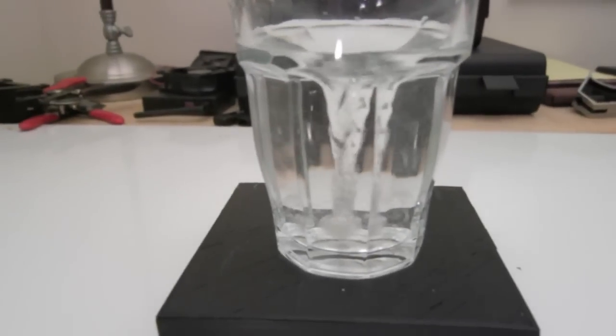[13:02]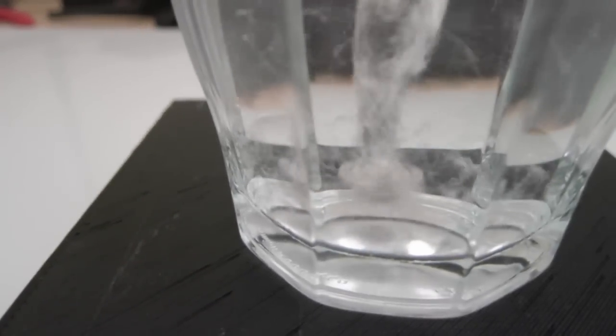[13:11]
Oh, you're gonna get all turned over now. All turned all up around, upside down. Check out the desk. Let's go handheld. Alright, we're back. Throw this guy on. And we'll plug it in. So you can see it's spinning really fast. You can almost see the bottom. And it's just rolling.
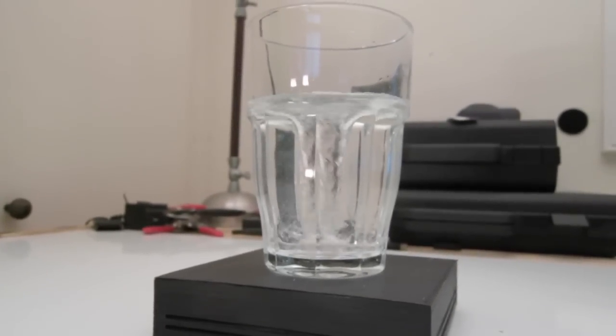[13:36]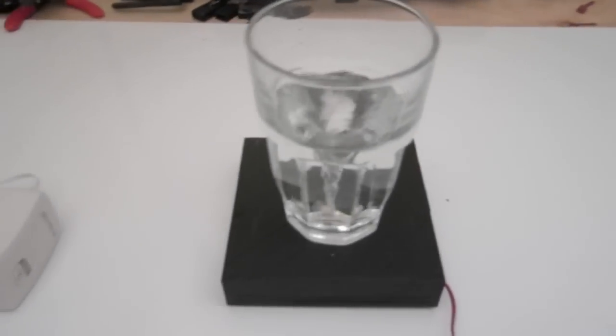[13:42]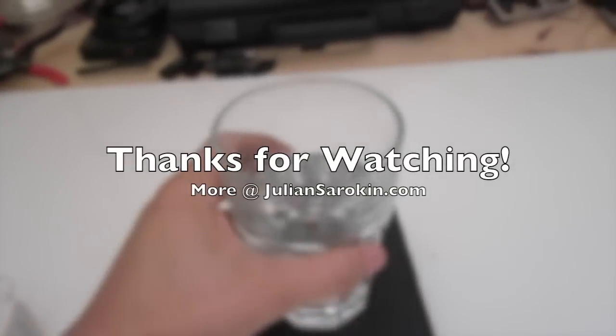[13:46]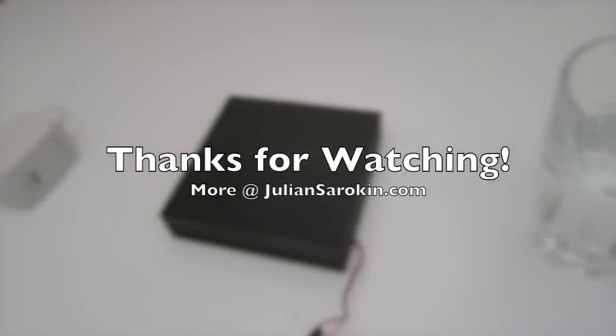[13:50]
And when you're done, it gets a little crazy as it spins down. Pull it off, and that's your drink.